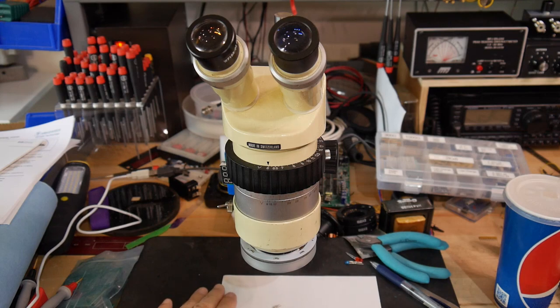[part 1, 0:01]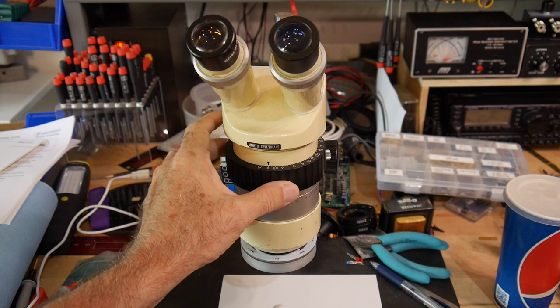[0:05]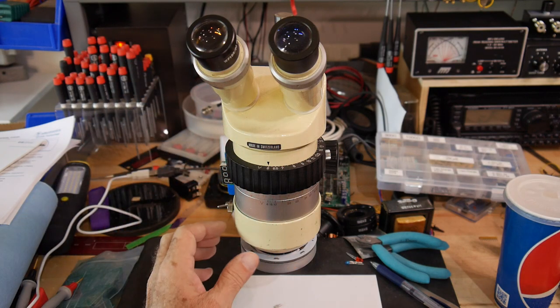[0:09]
All right. I thought I'd show you a hack I did on my microscope. It's a nice microscope. It's a Serio. It didn't have a ring light though. And in the old days, I used to get ring lights that were a little fluorescent tube that wrapped around. But you can get LED ring lights these days. And I'll show you a cheap way to do that.
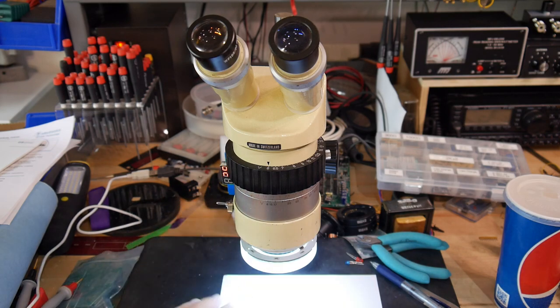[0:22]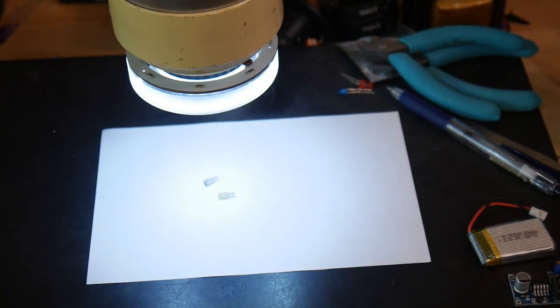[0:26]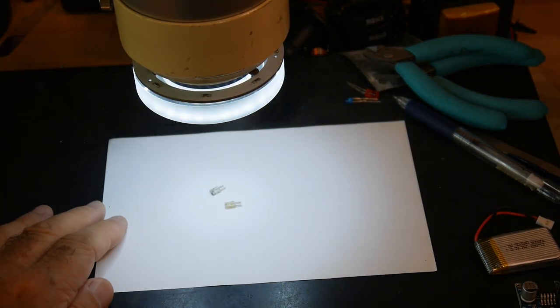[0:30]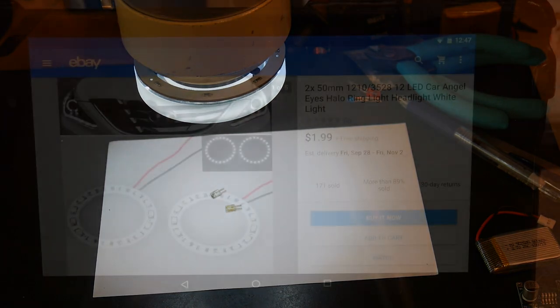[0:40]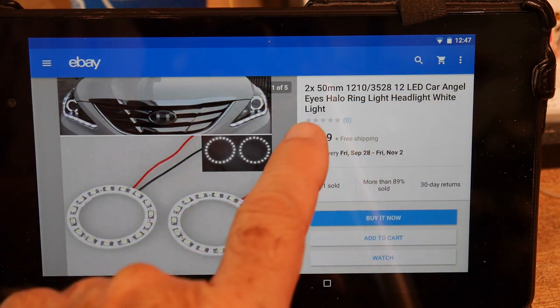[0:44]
You can see the ring light here. Gives nice lighting. And you can get these for just $1 or $2. So let me show you an eBay listing. So the trick is to search on Angel Eyes.
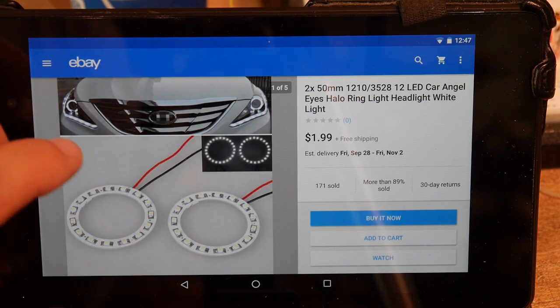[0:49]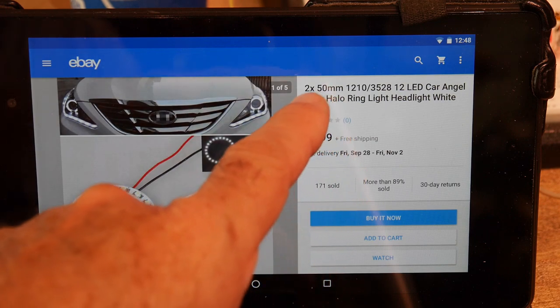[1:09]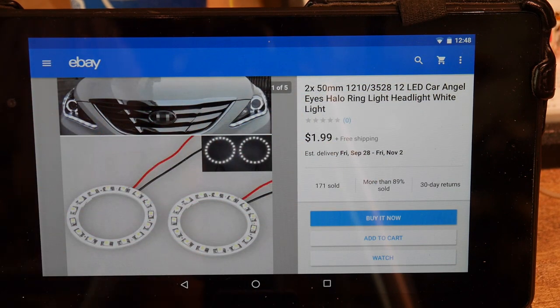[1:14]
So some of the cars, starting with the BMWs, had a ring light in the headlights. And you can get these replacements or upgrades or whatever. They're just a circuit board with a ring of LEDs on them with resistors, so they run off of 12 volts. So here you're getting two of them, 50 millimeter diameter. Again, they run off of 12 volts, and you're getting them for $2. So they're $1 each. So that's a pretty cheap ring light.
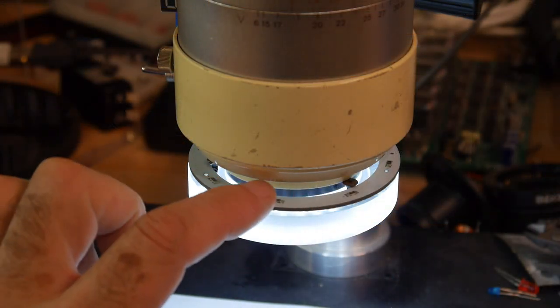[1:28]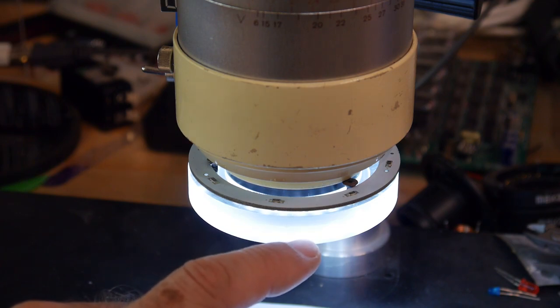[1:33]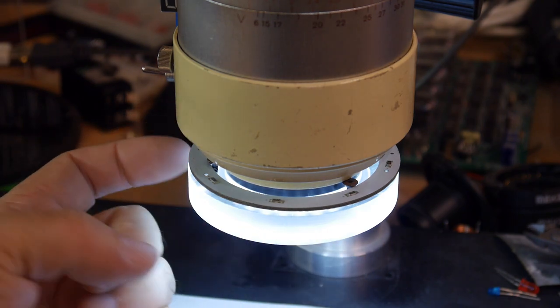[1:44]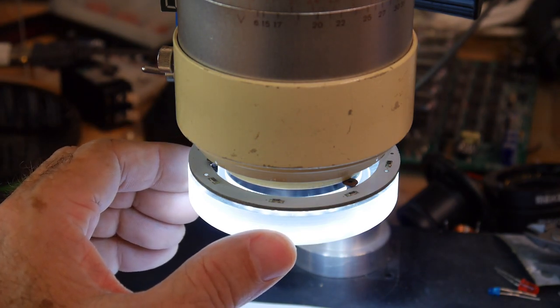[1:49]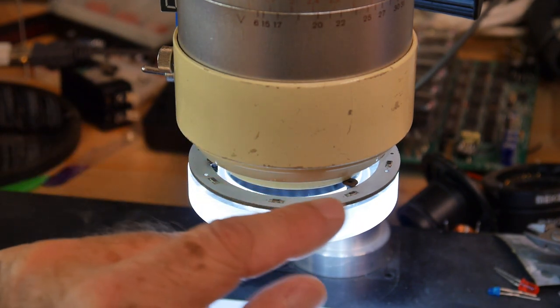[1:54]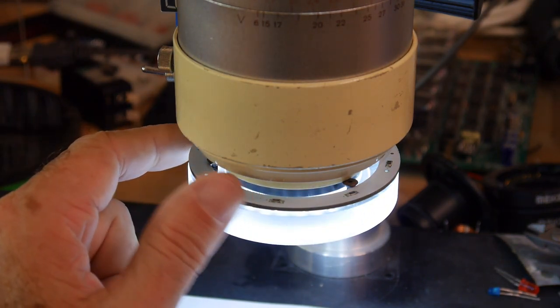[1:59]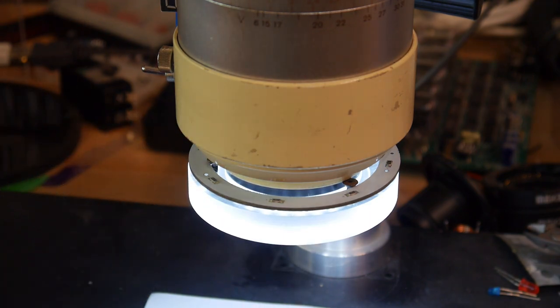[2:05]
So you need some way of mounting the LED. I have a piece of Lexan here that I turned on my lathe, and it's just a ring that fits the lens that's on this microscope. So it's a snug fit on the lens. It's a press fit on the lens, and then the little Angel Eye PC board just sets on top of it. In fact, it's held on by a couple of screws, but you can't really see it here. But anyway, that gives a nice mounting system.
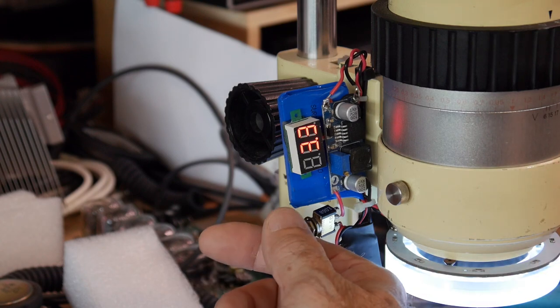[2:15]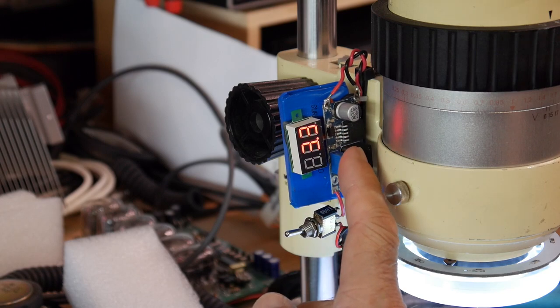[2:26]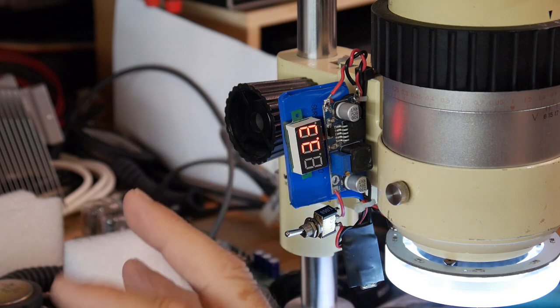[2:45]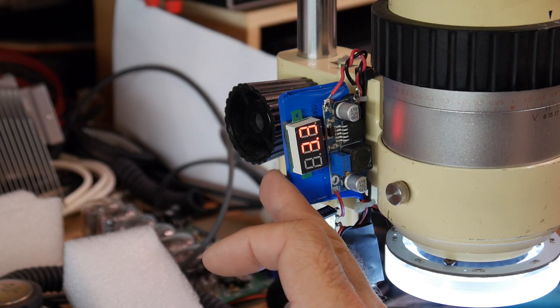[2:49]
So you'll need some way to power the ring light. And for a while, I just would hook up one of my lab power supplies. Then I decided to go ahead and make it battery powered. So there's a lithium battery here. There's a DC to DC converter to 12 volts. There's an LED monitor for the battery voltage, and then the battery charge circuits down here. So I'll show you the components I used to build this. I stole this battery out of something I bought at some electronic thing that I had. It's like a 600 milliamp hour battery, 3.7 volt lithium.
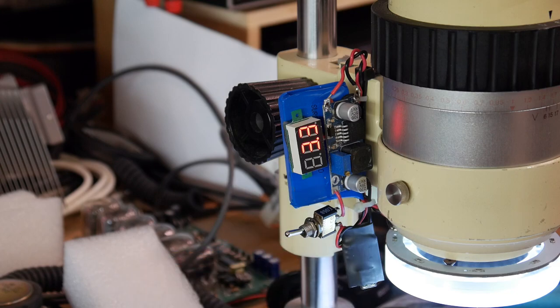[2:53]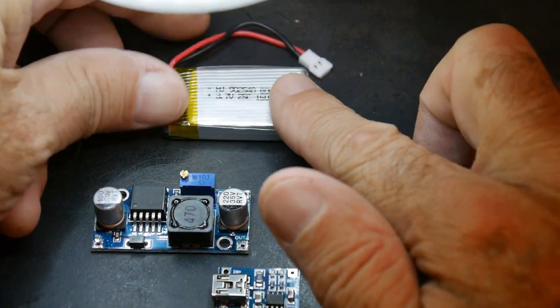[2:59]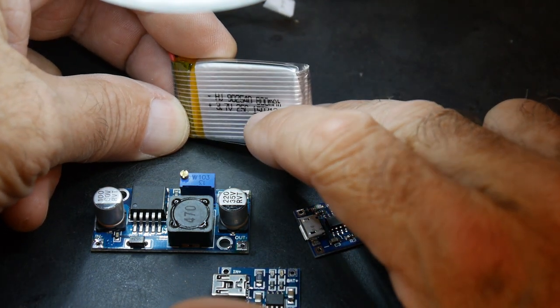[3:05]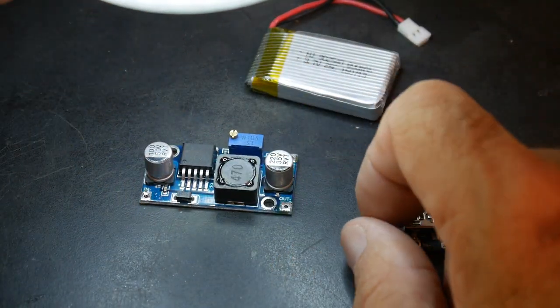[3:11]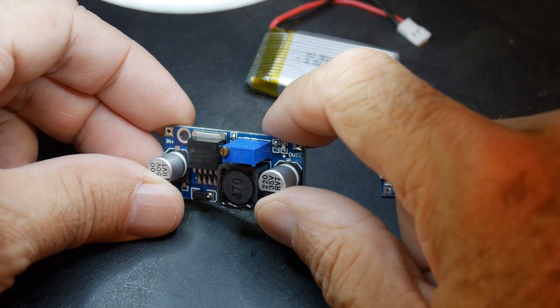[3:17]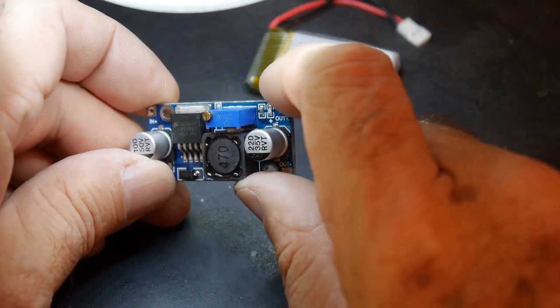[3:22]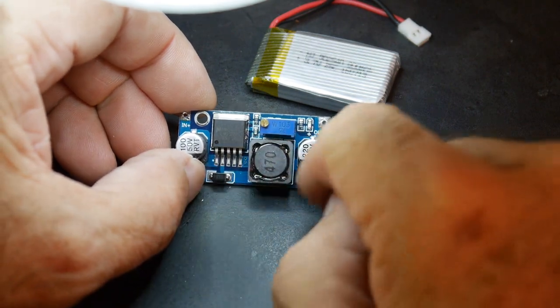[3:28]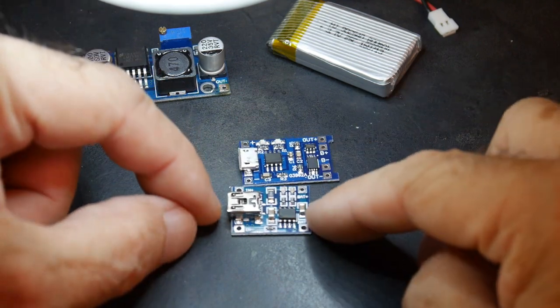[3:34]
I'll show you the parts. All right, so here are the parts. This is just some kind of random battery. This one's a 3.7 volt battery also. This one is 800 milliamp hours. And then you'll need a DC to DC converter. This is one made out of a LM2596, is that right? I don't have a magnifying glass. That's right. And so it does a good job. And then you'll need a charging circuit, and there's a couple available.
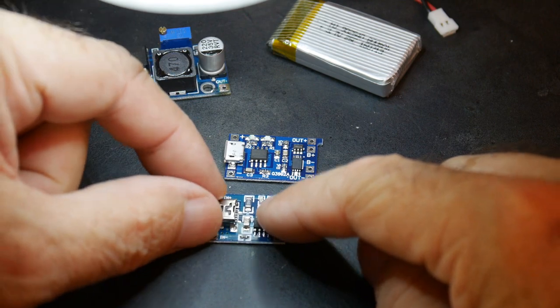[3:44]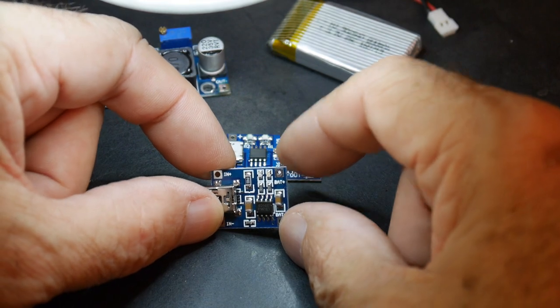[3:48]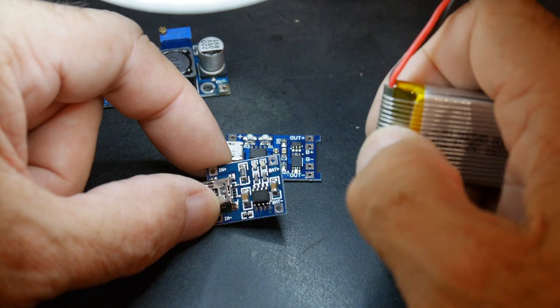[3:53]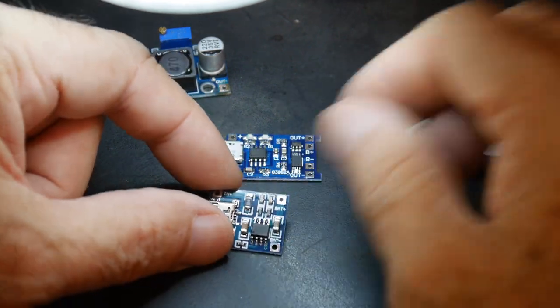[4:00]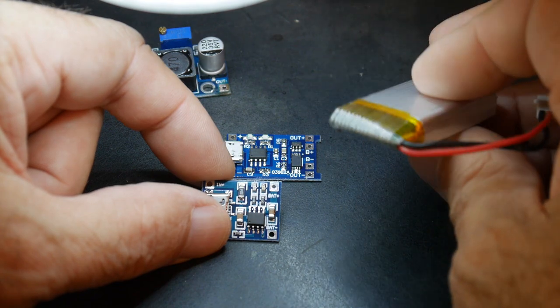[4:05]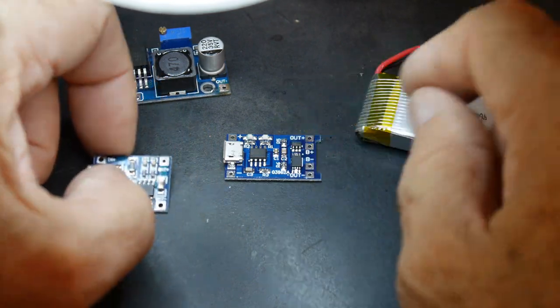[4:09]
This is the one I think I'm using here, and it's a charging circuit, 5 volts in, and you put your battery across here, and it handles all the charging. Sometimes your battery has a protection circuit in it, and sometimes your battery doesn't have a protection circuit in it. So if you have a protection circuit, then you don't need this. Protection circuits make sure that the battery doesn't go below, say, 2 volts. Make sure it stops.
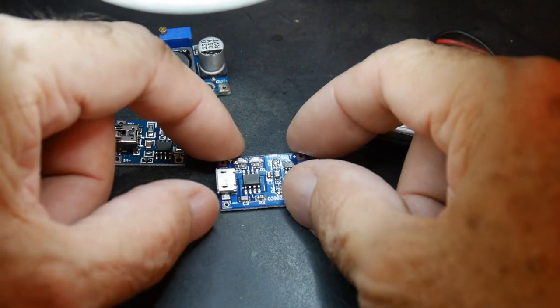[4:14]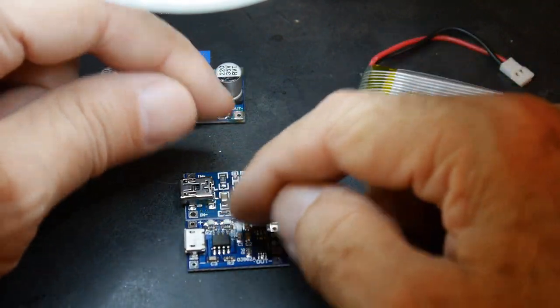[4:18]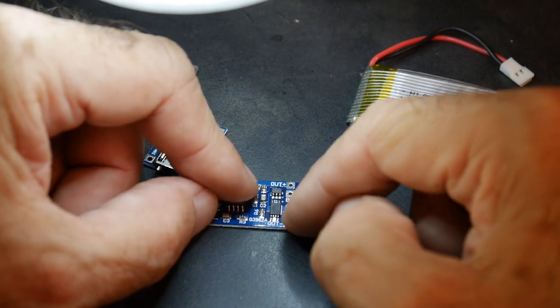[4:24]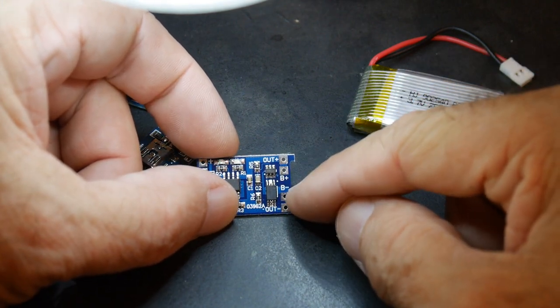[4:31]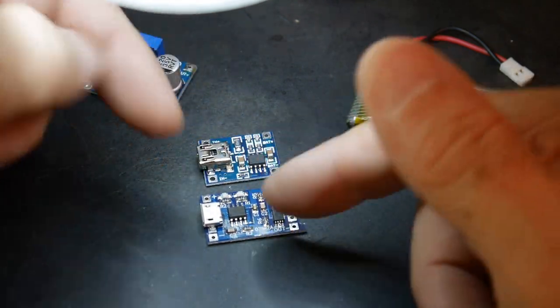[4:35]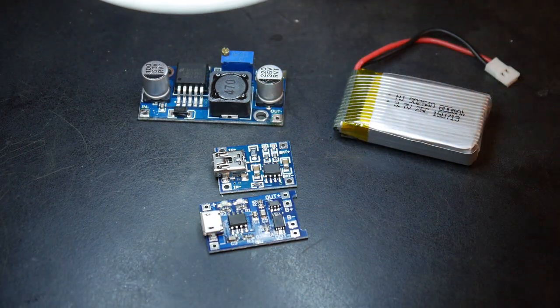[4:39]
If you don't have a battery with a protection circuit in it, then you can get this kind of board, which is the exact same circuitry as this one, but it has extra circuitry on the back. And this extra circuitry on the back is the protection circuitry for the battery. So the battery goes across the B terminals, and then the output is the voltage terminal. So, I mean, these things are dirt cheap too. They're like 50 cents each or something. So put together a real nice little system.
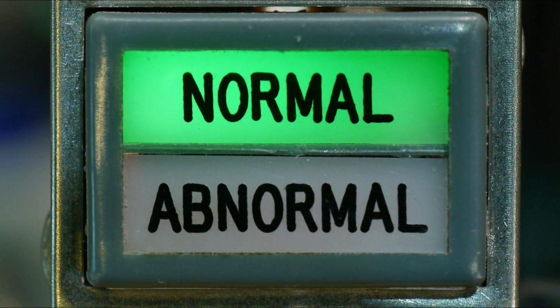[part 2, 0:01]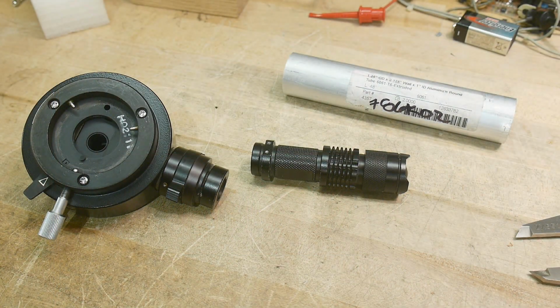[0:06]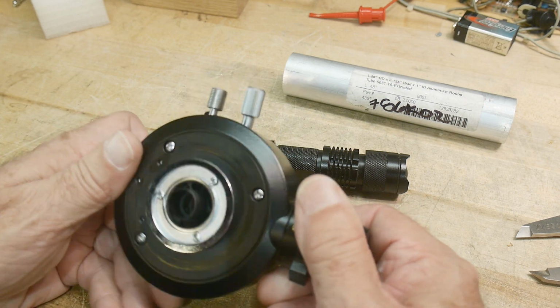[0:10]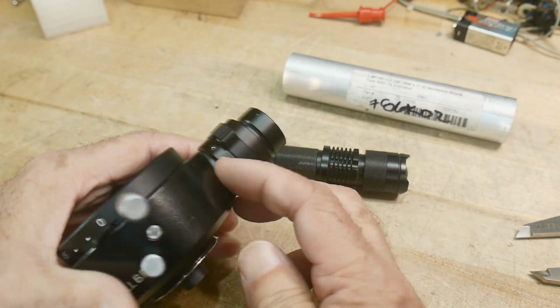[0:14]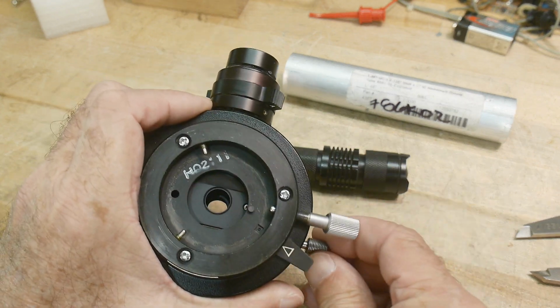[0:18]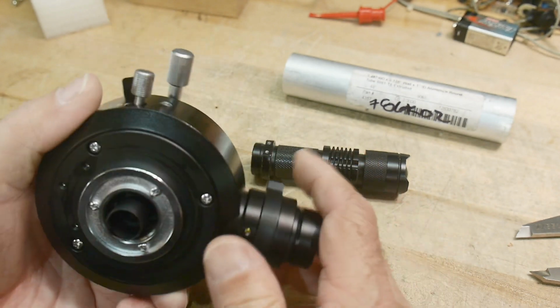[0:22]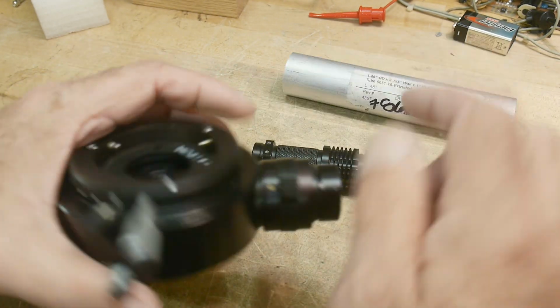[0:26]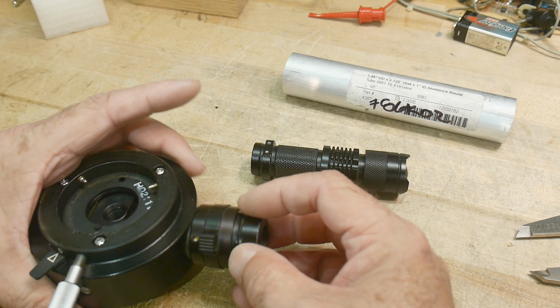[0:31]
All right, I get to do some machine shop stuff today. I have this out of my new microscope. This is the illuminator section that has the prisms in it. You can see here, it moves the prisms in and out for bright field, dark field. And the light comes in here and then you look through it that way. And so it needs to have an illuminator on this side of it.
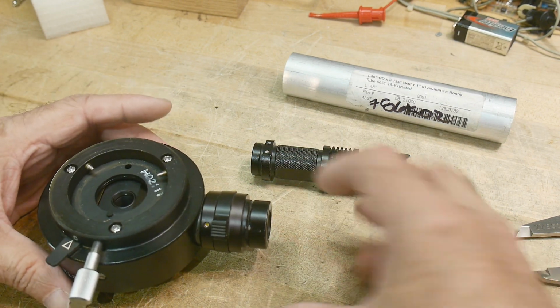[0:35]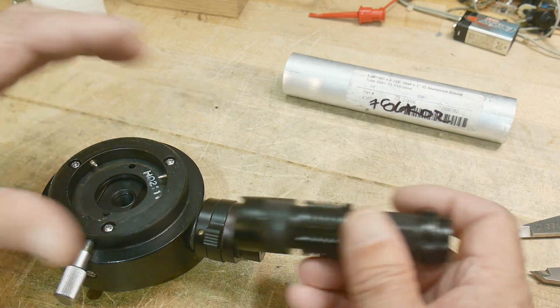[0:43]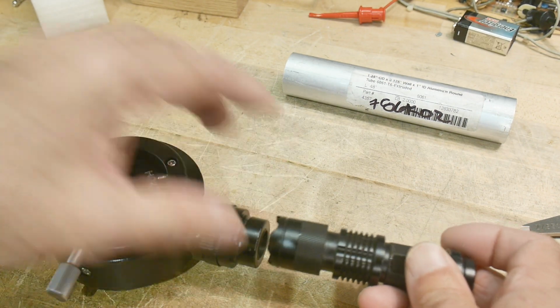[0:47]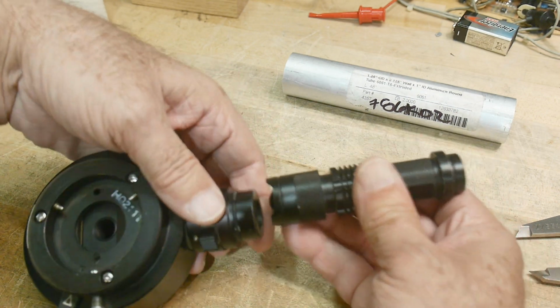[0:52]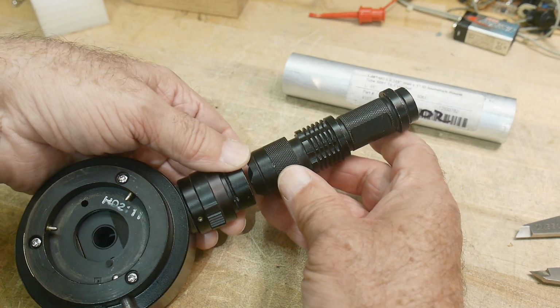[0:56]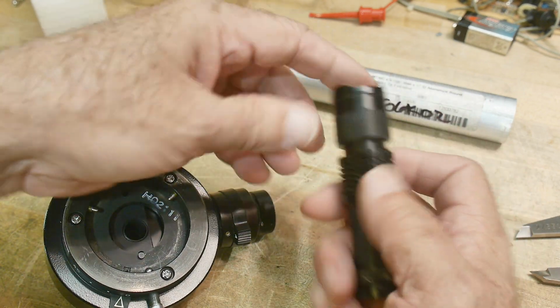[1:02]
Now, from Olympus, it had a big light bulb and heat sinks and everything and came in here and attached. I found that this flashlight works pretty good for this thing. And it is almost the same diameter as this here. These are both about 1 inch. And so what I need to do is make something to hold these together permanently.
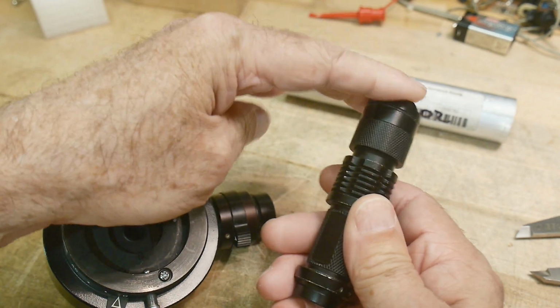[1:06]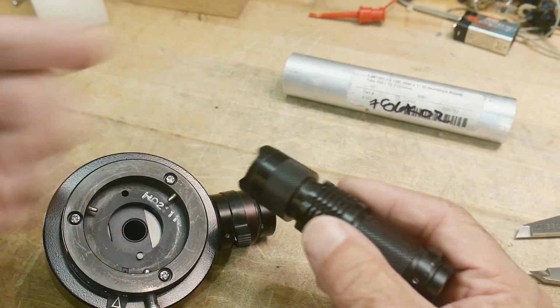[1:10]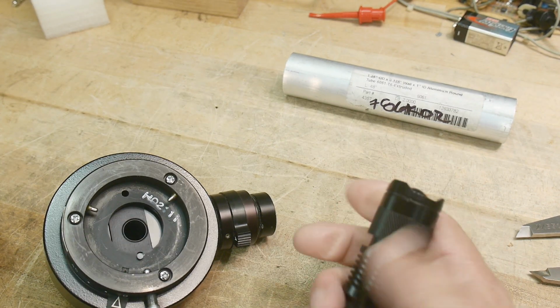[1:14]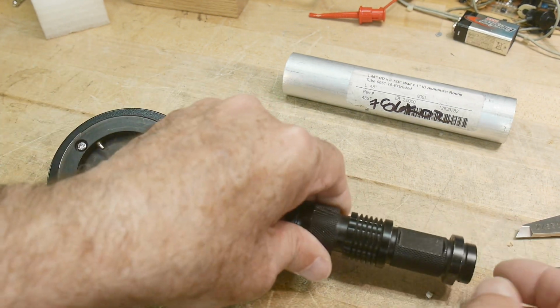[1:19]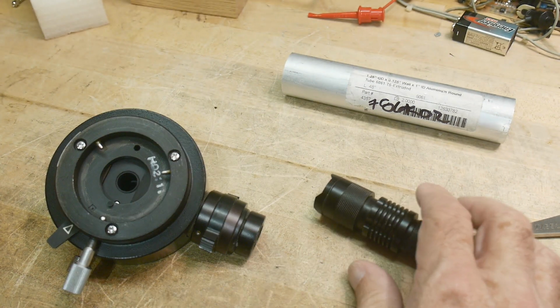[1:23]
And it's really nice. Now the flashlight also has focusing. It has a barrel that can go in and out. You can get a wide beam this way or a narrow beam this way. And that's also nice for the illumination. Sometimes it likes a wide beam. Sometimes it likes a narrow beam. So I think what I'll do is I'll make it so this is sticking out and I can push it in and out. So that'll be nice.
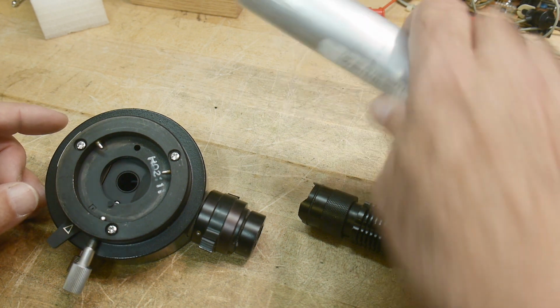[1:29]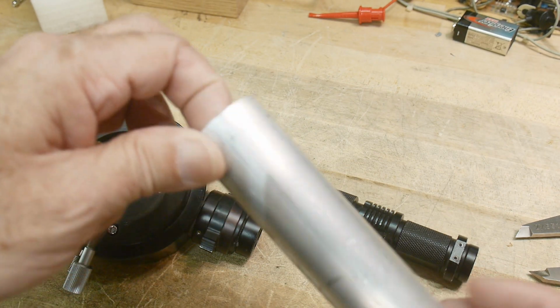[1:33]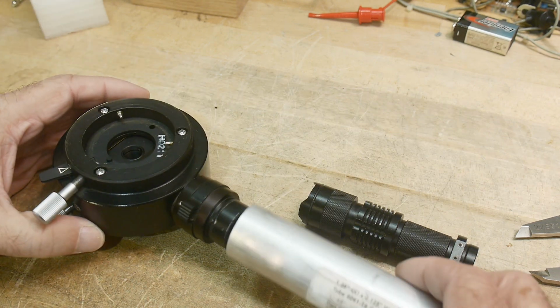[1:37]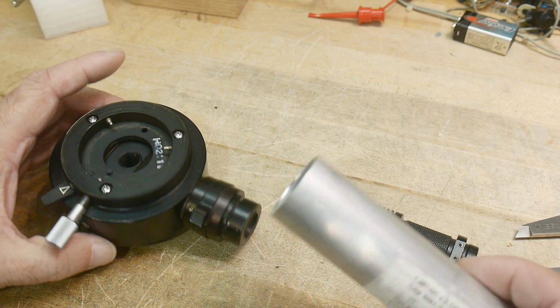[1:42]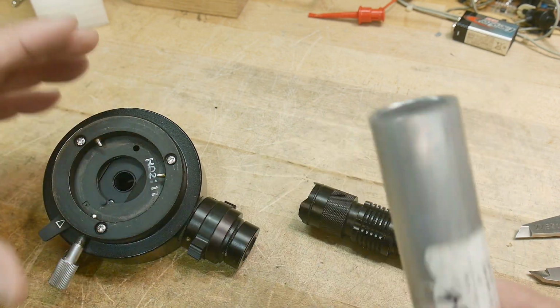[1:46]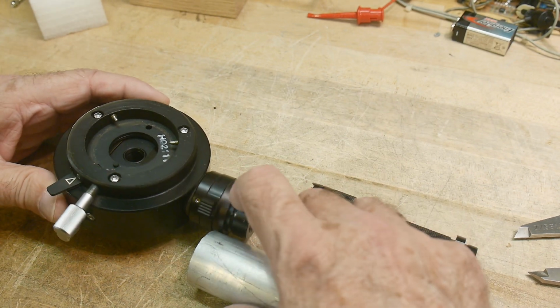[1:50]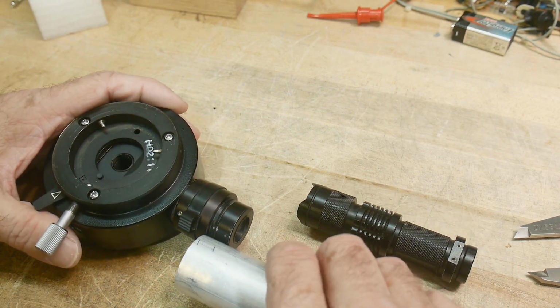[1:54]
I needed some stock material to hold this all together. And so I got some thick wall tubing, 1 inch ID and eighth inch wall. So that will be perfect. It just barely won't fit, so I can bore this out. And so I think my first operation will be to bore this out and then put some set screws in it. There's a groove here for the set screws to bite into.
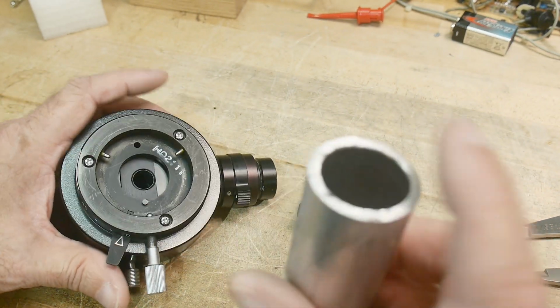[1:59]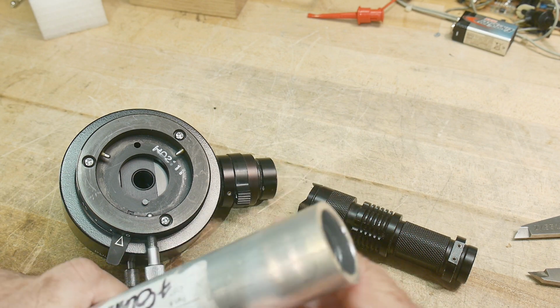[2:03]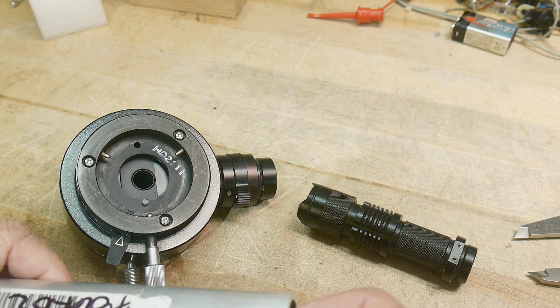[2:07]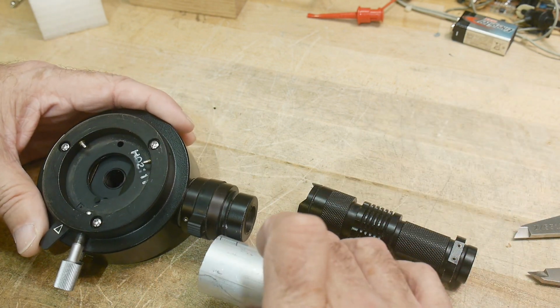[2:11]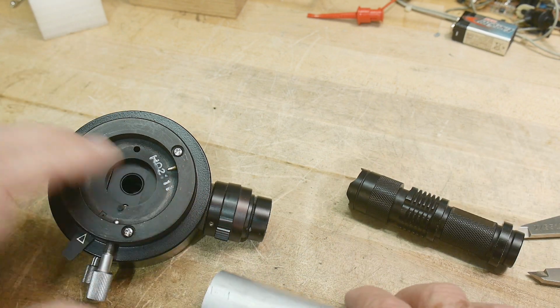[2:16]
So I think what I'll do is I'll put it in the lathe, I'll dress the end, I'll bore out the middle, and at least get this part working, and then figure out how long I want to make it, and attach the other end. So yeah, let's go do that.
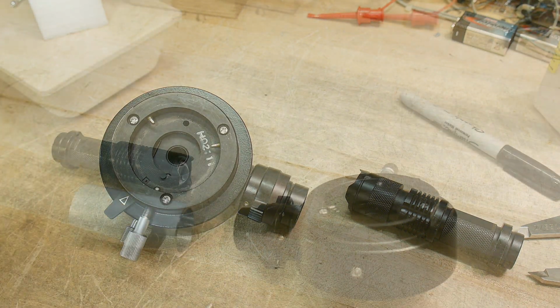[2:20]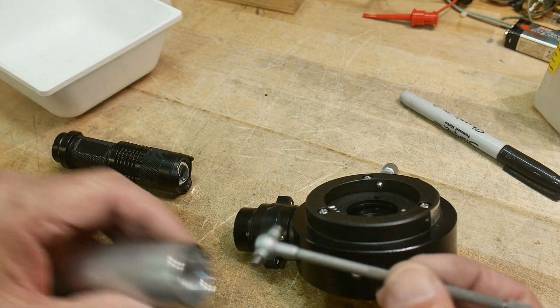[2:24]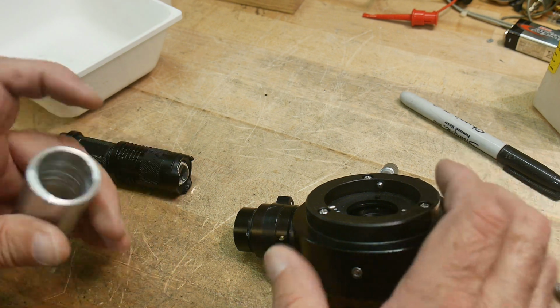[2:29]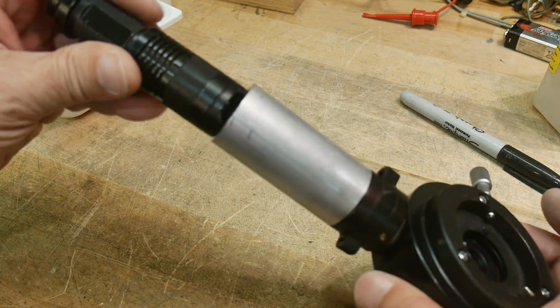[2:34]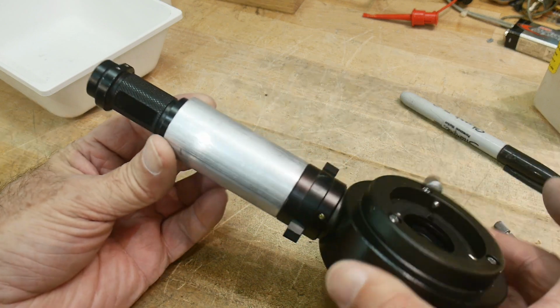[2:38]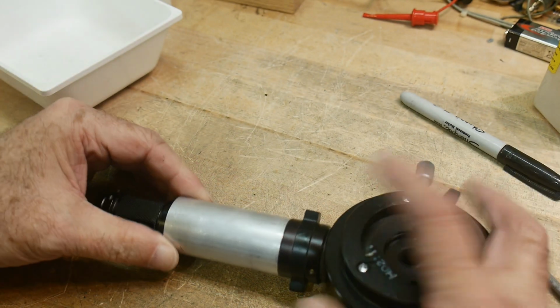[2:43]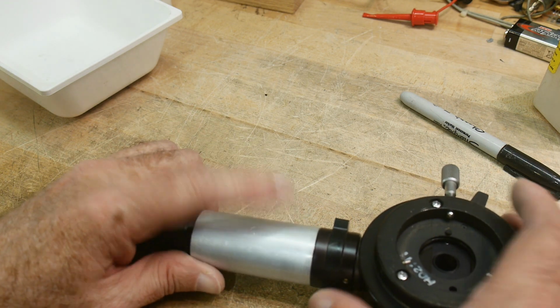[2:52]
All right, I have my tube made. Got to use my inside measurement tool, which is fun. So this goes in here like that, and then the flashlight goes on the other side. Looks good. I need to put some holes in here now and figure out what I want to do. I think these holes are okay.
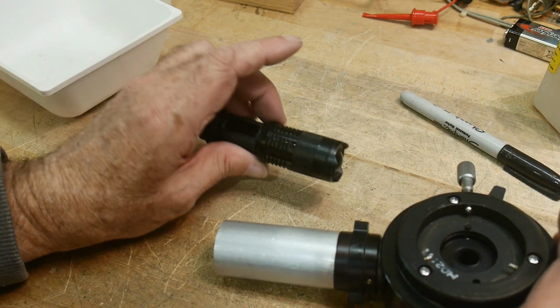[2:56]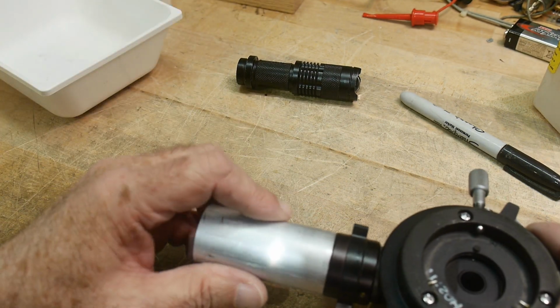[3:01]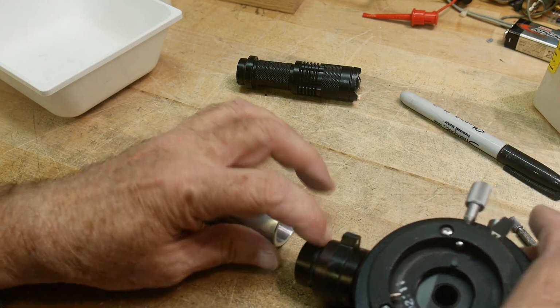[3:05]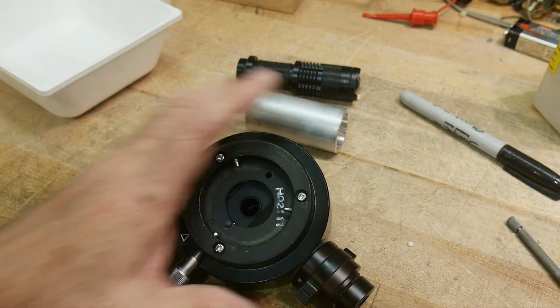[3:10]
I'm not quite sure if I want to crank down on the flashlight quite yet. Not sure where I want to put the screw, so I'm going to leave it an open tube, see how it works in the microscope. But we can at least put this groove in here. Let's go measure that.
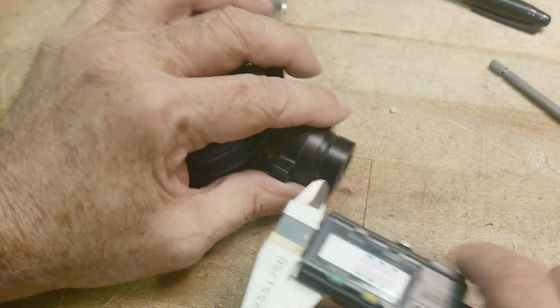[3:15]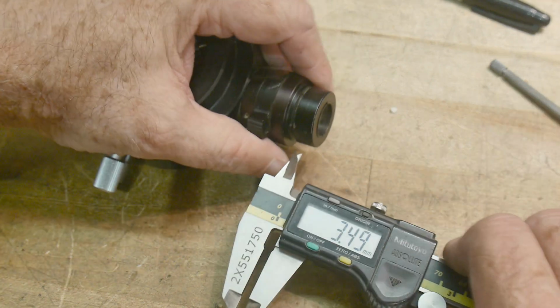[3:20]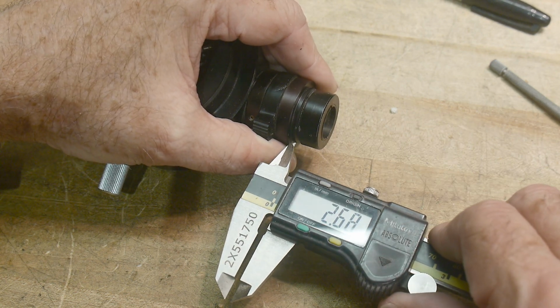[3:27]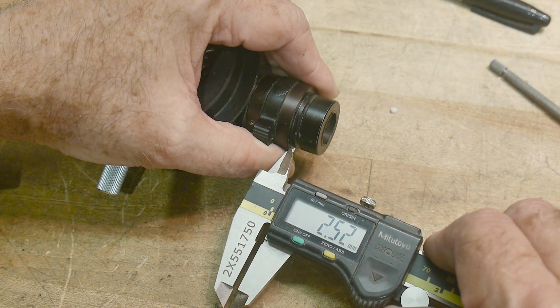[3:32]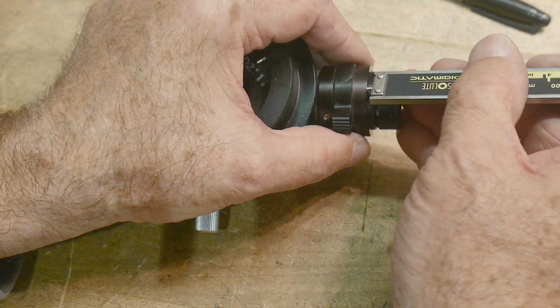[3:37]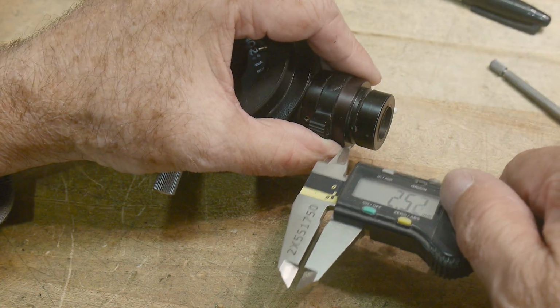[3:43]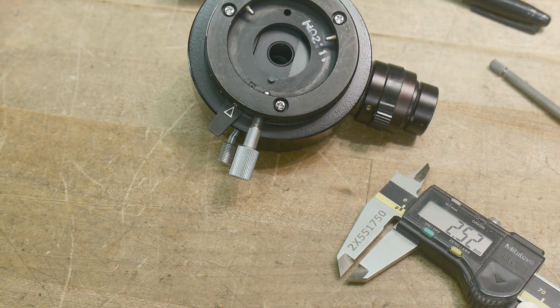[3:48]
Let's see if I can kind of estimate where the center of the groove is here. Lighting's not great here. The center's right about there. 2.6? What is 2.5? Figure they'll put it on an even mark, right? They're Japanese, probably gonna put it on an even mark. I think 2.5 is probably pretty good. Yeah, 2.5 I think is fine.
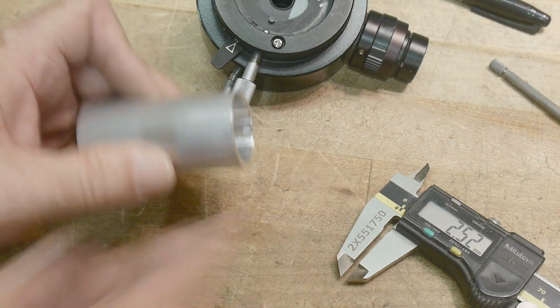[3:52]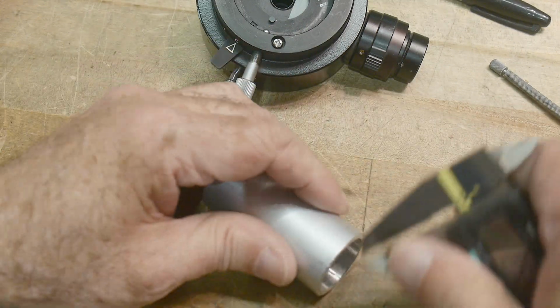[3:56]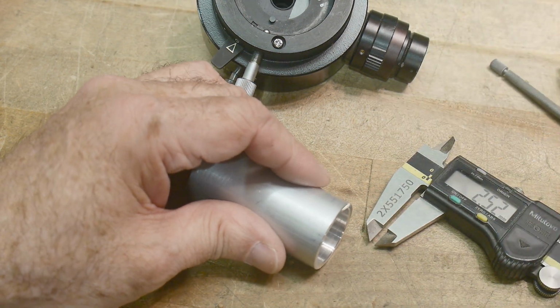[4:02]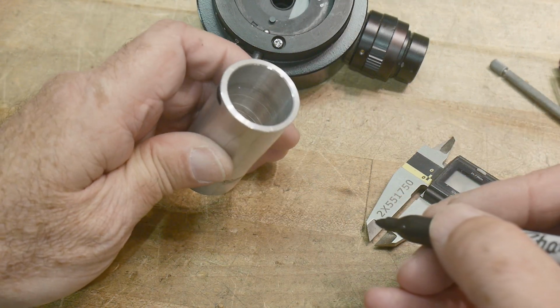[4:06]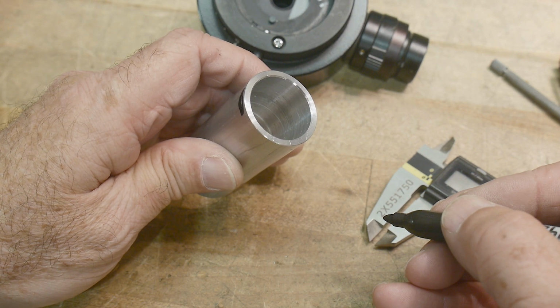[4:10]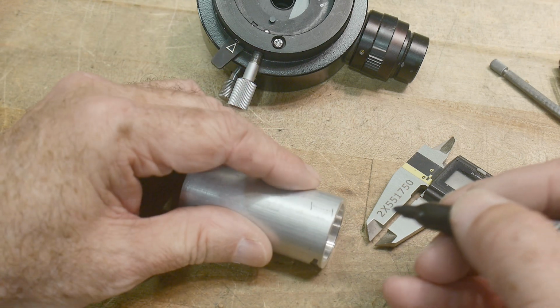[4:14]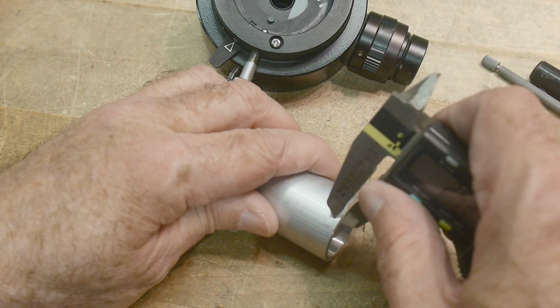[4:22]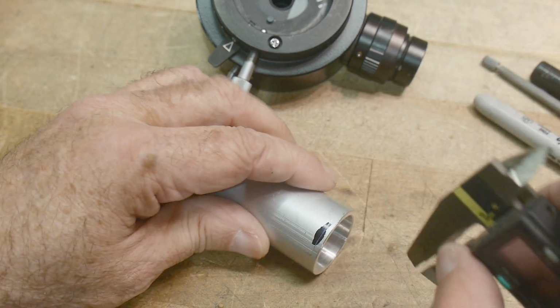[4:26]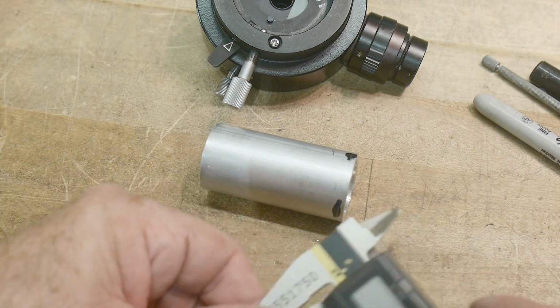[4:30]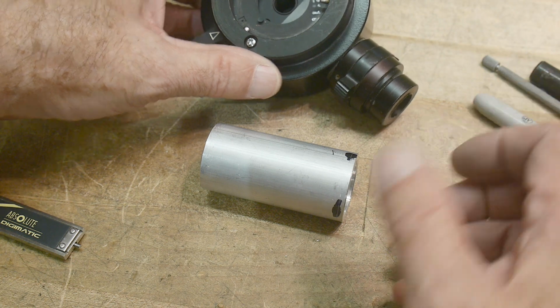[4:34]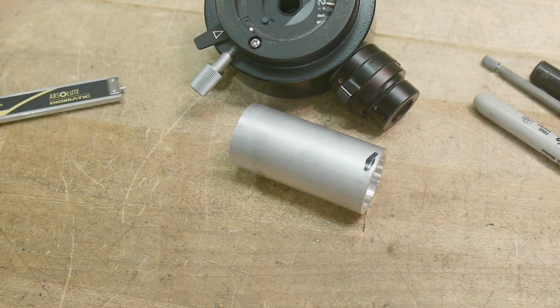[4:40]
So I will go ahead and transfer that onto here. I'll also put some black on it here. Do I need two for now or just one? I think it's better probably to have two, maybe 90 degrees apart. All right, so let's mark this. All right, that looks pretty good. So I'll probably use a 4-40 set screw. So let me put some holes in here and put some set screws on.
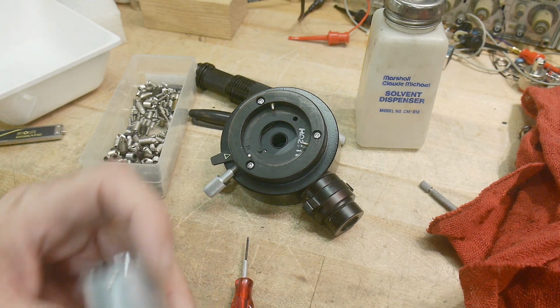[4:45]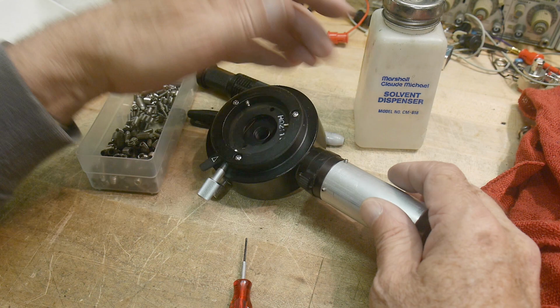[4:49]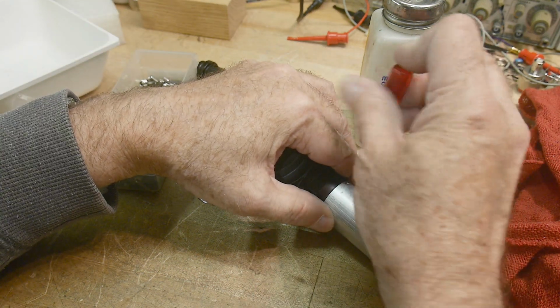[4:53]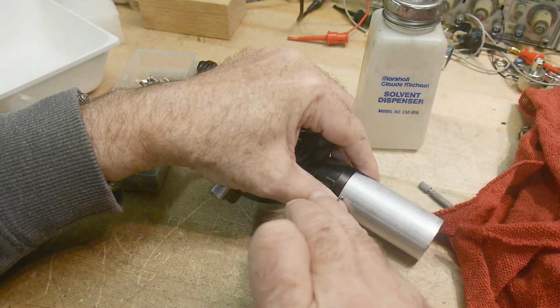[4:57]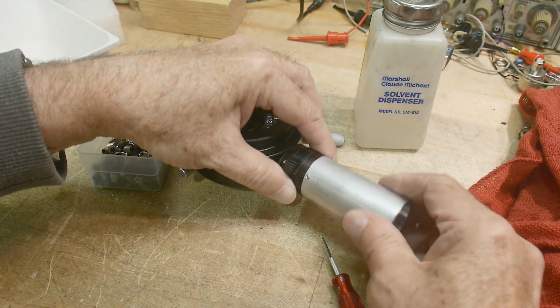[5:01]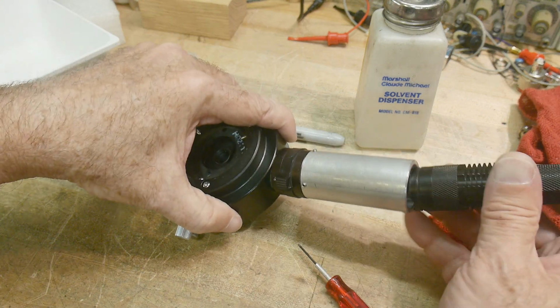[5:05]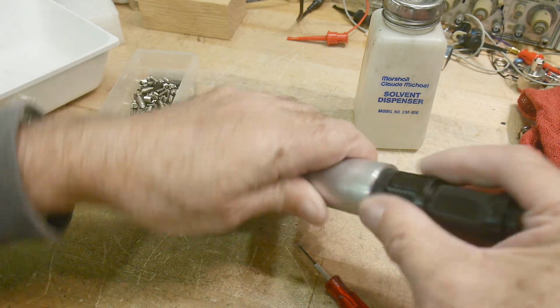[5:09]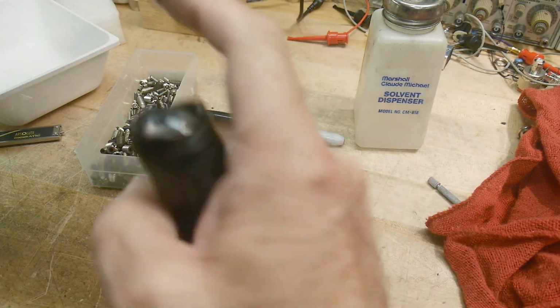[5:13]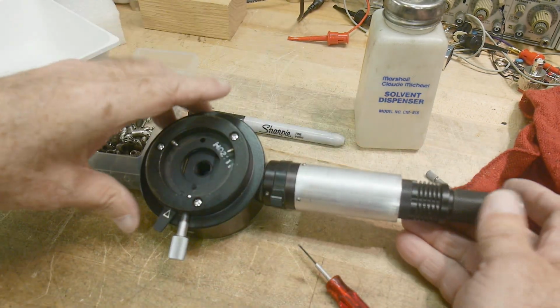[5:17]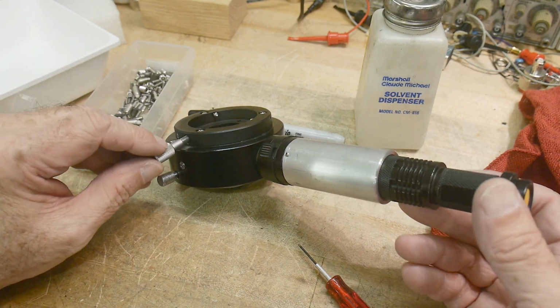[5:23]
All right, got my set screws in. See if this is gonna work. Oh, very rigid, very nice. Then my flashlight will slide in here. A nice tight fit. What happened? I just got something in there. All right, that's gonna work out great. All right, put it on the microscope and try it out.
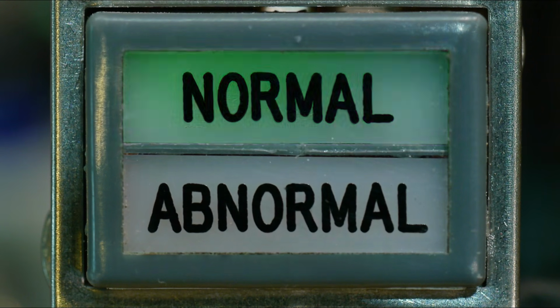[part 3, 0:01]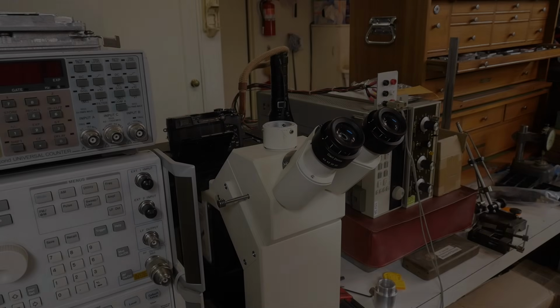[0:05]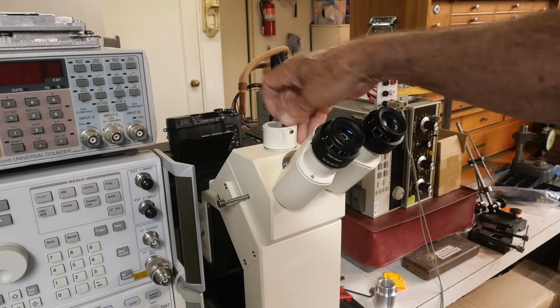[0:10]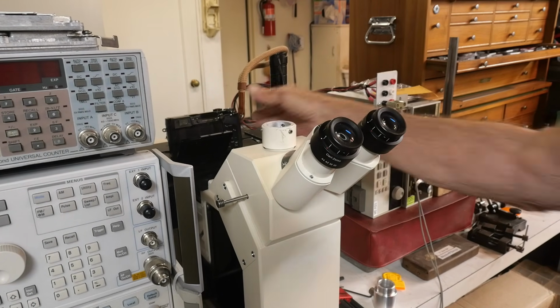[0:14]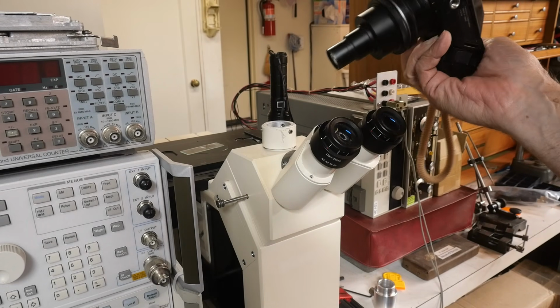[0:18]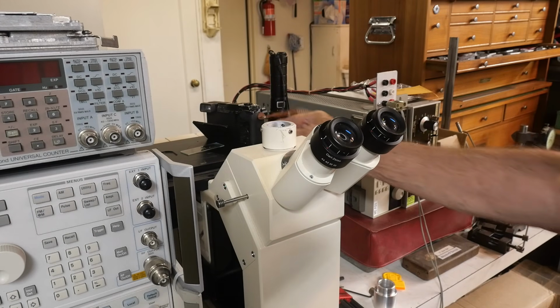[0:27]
All right, this microscope has a trinocular head, so you're supposed to mount a camera here, and I need some type of adapter. I do have a camera that I use on my Olympus microscope. It has a projection eyepiece in it, so it's ready to go, but it doesn't mount. So I took some measurements and I designed a little adapter here.
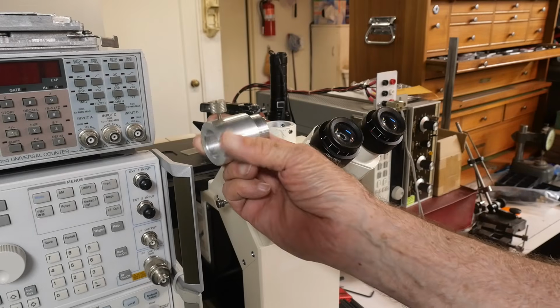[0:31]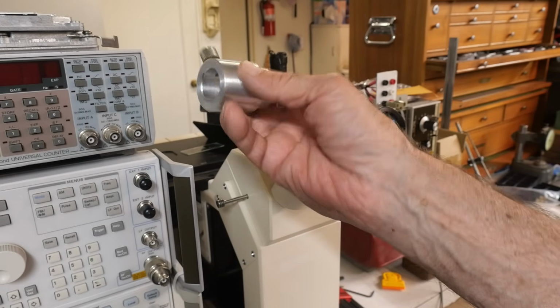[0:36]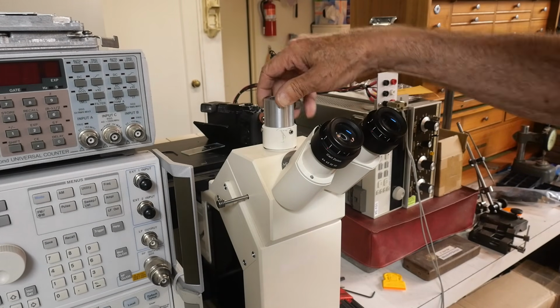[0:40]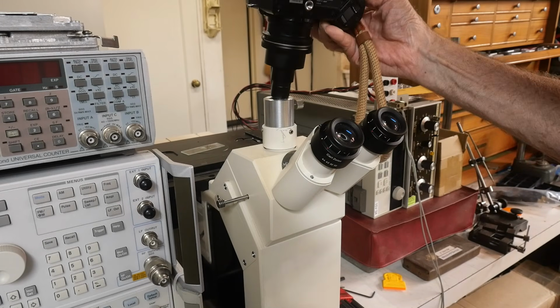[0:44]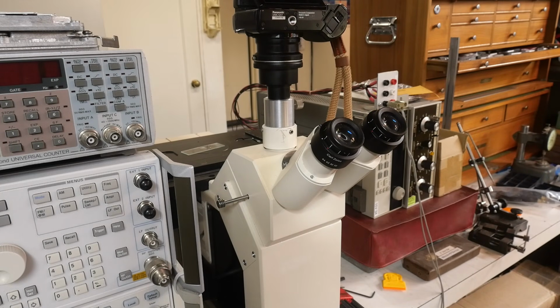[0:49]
Okay, I got to use my lathe. Got to use my new DRO. It worked really good. So I got to measure diameters and stuff with my DRO. And so this is going to pop in here, like so. And then the camera will go in up here. And I put a thumbnail on it here. So yeah, that's going to work out great and be able to take some pictures.
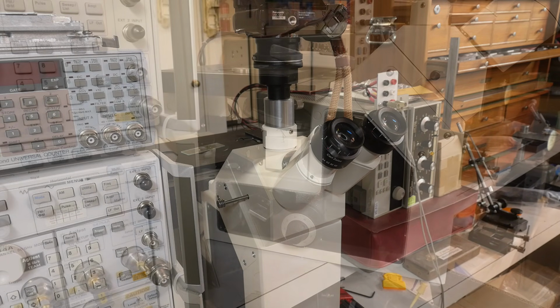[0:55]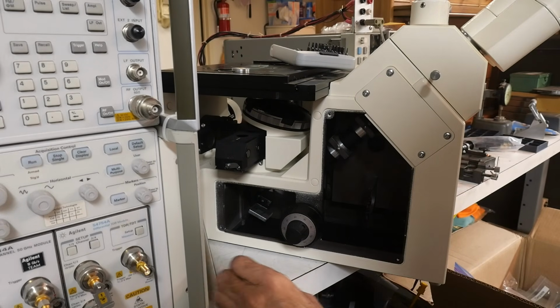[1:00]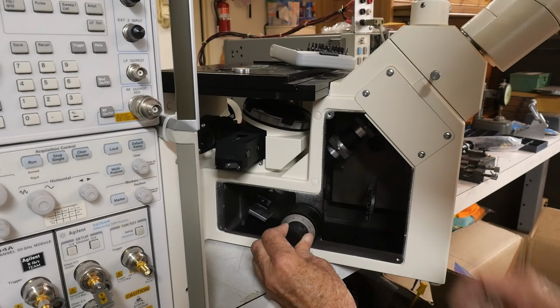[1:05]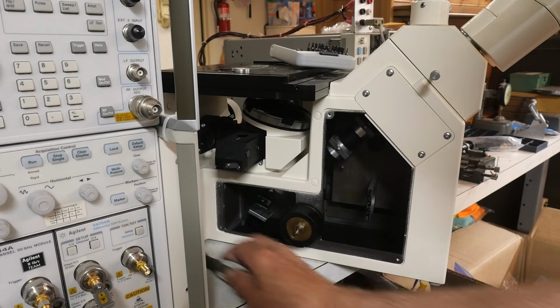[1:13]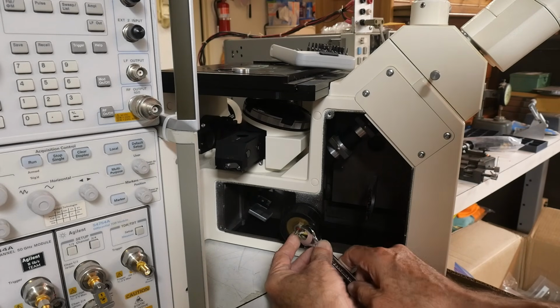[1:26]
All right, I want to put the cover back on. So I need to do two things. One is I need to take this knob off, and that will expose the wheel. I guess I need a wrench. Not the right size. Still not the right size. Bad guess. All right, there we go.
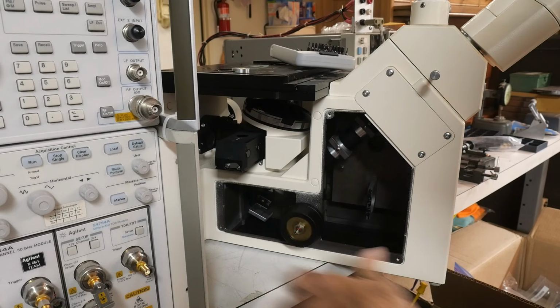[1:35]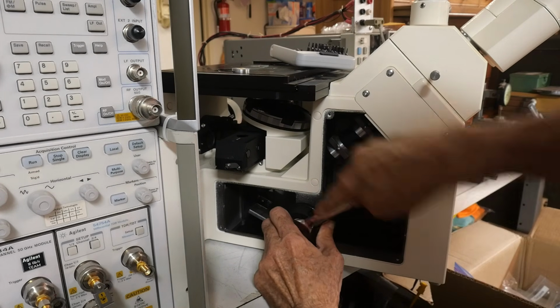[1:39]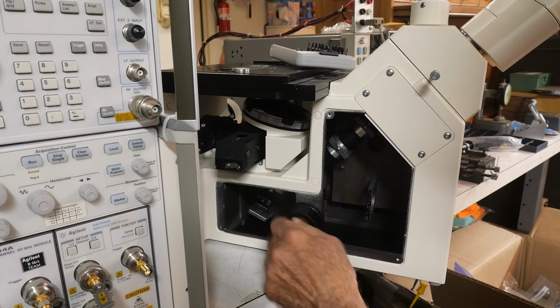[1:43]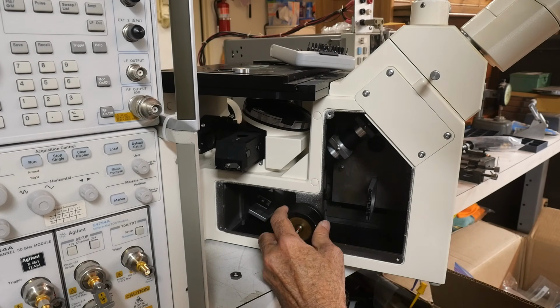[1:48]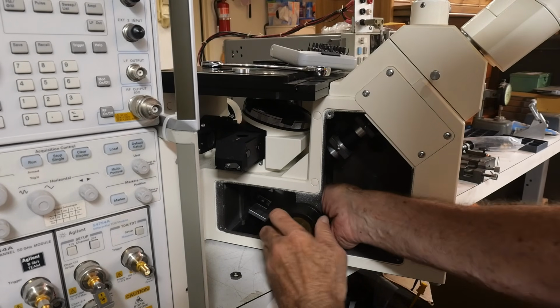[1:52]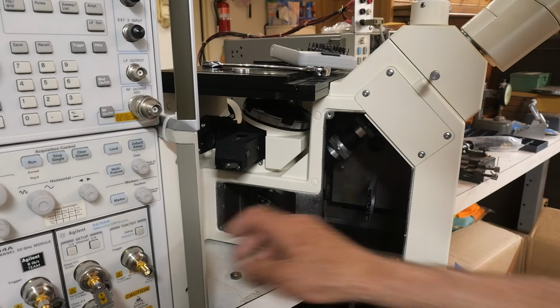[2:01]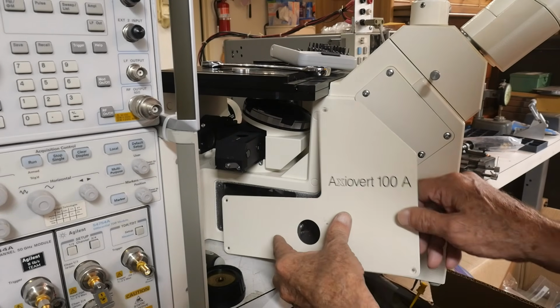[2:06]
All right. Does that come off or does it thread off? Let's see. That threads off, okay. Shaft on the inside. There we go. Now I can put the side cover back on. Oh, that's much nicer. I gotta find some screws.
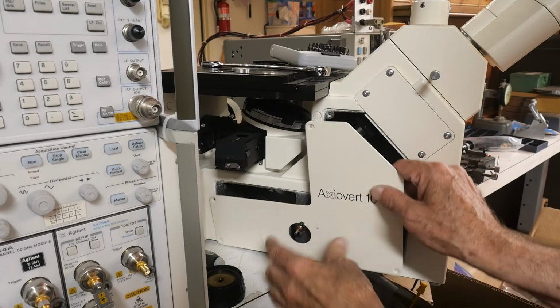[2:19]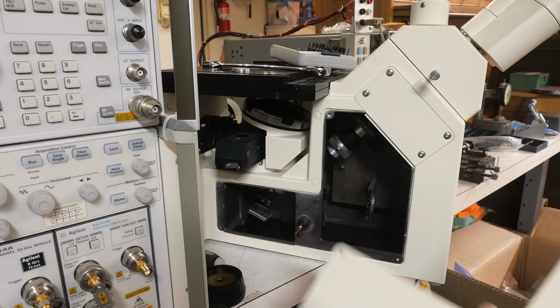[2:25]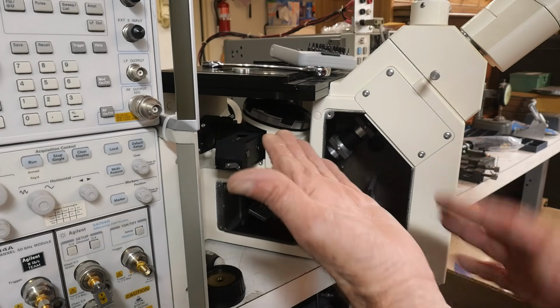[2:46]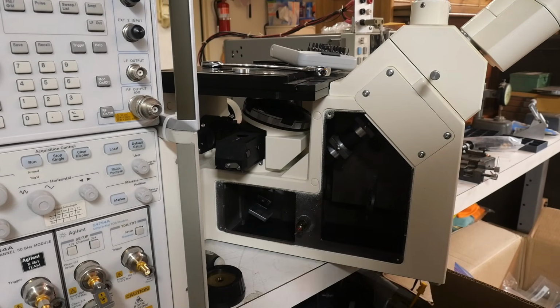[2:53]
But before I put the cover back on, I'm going to clean that mirror. It's quite dusty. And so I need to go find some optics cleaner, which I have. You can use alcohol, but it does leave a slight residue. There's some good optics cleaner. What you don't want to do is scrub it. One of the techniques you can do is just to use some lens paper and drag it across. That does a good job. So yeah, let me go find some stuff and I'll clean that and put it back together.
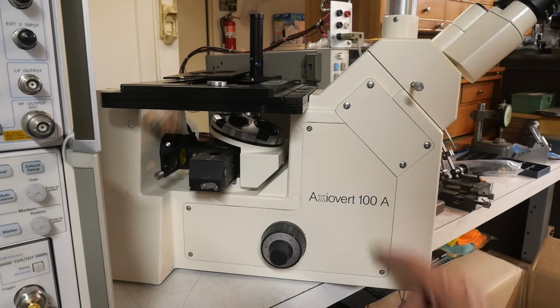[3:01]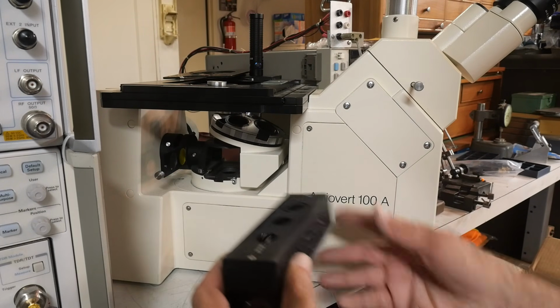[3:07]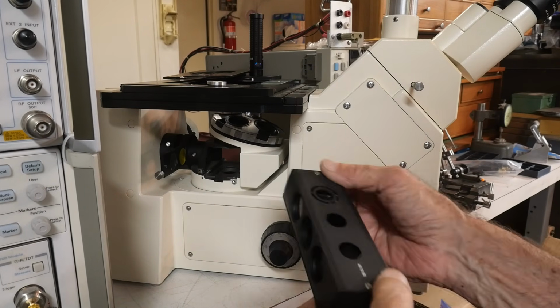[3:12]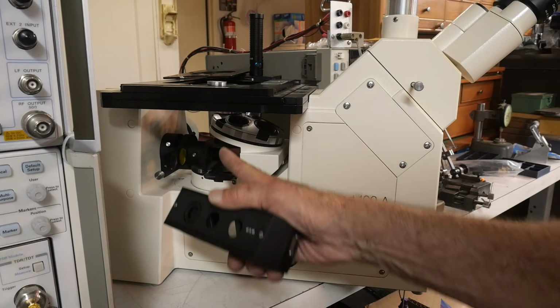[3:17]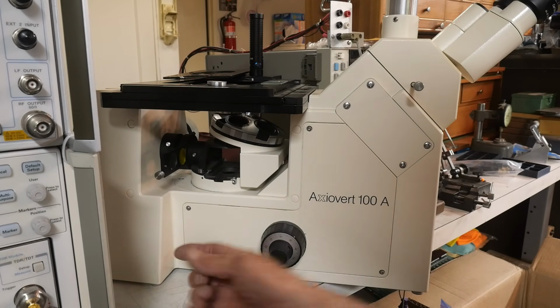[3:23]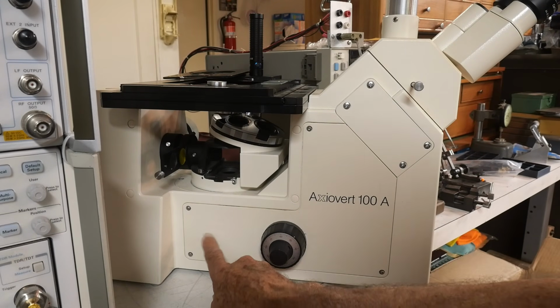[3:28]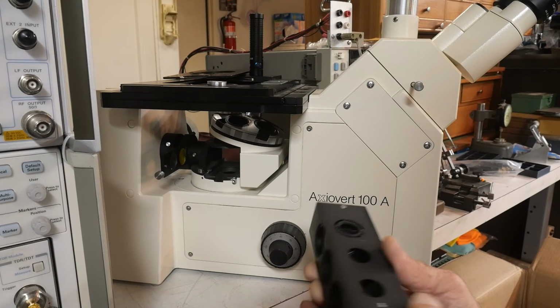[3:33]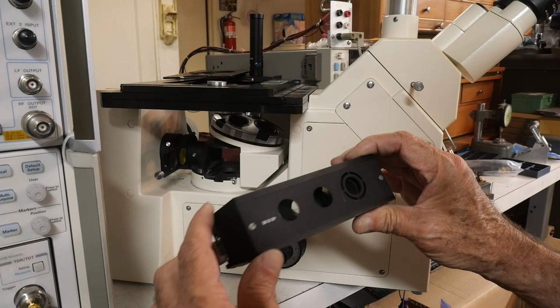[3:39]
Now, doesn't that look nicer? Yes, indeed. While we're here, I can show you, it's a strange device. It acts as a prism, so light comes in the back and then goes up. You're also looking from the bottom, right? So you look down this way, and there's a mirror we saw, and I cleaned the mirror, and then it comes up this way, and then this is a two-way splitter. So part of the light just goes straight through. In its middle position, it's just straight through.
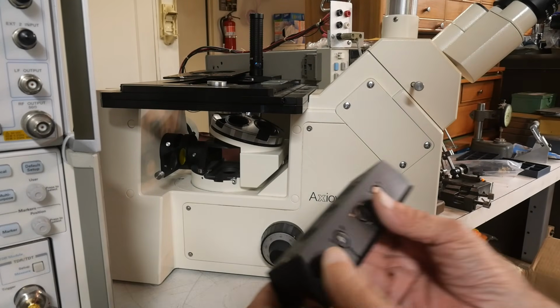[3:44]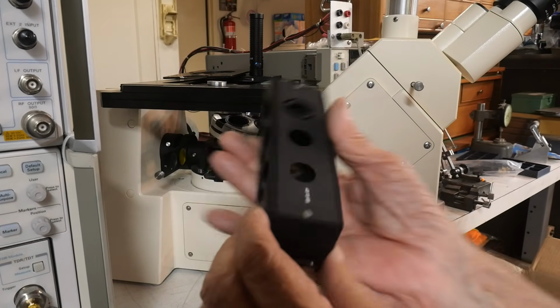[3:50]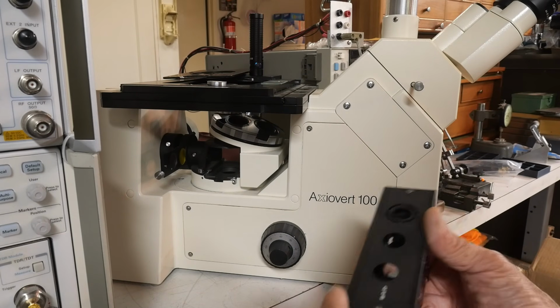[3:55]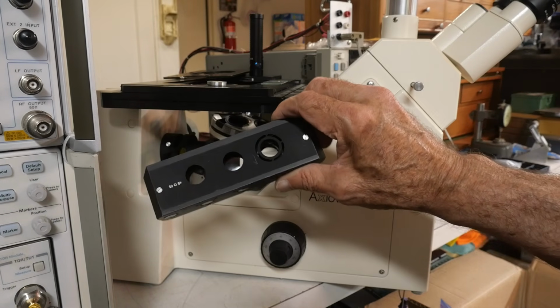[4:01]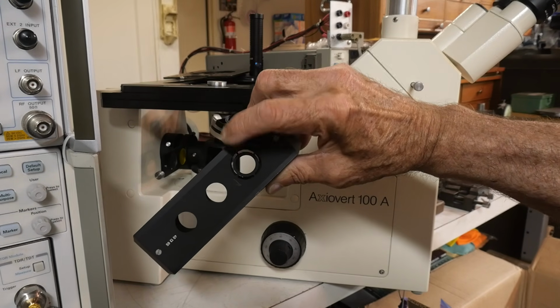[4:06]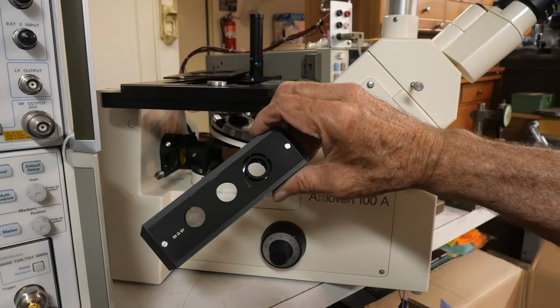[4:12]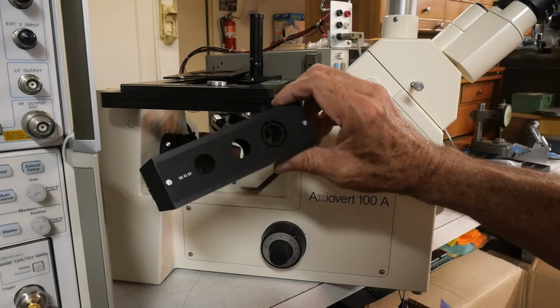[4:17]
And on the left position, it says D, it has a neutral density filter on this side that limits the amount of light, so it darkens the light. And then on this side is the dark field illumination. That's something I talked about in a different video. I don't know if I remembered to put it down below, but can you see that there's kind of a ring? This one here. If I get it just right, there's a ring around it. So you look through the hole, and then that outer annular ring is where the illumination goes.
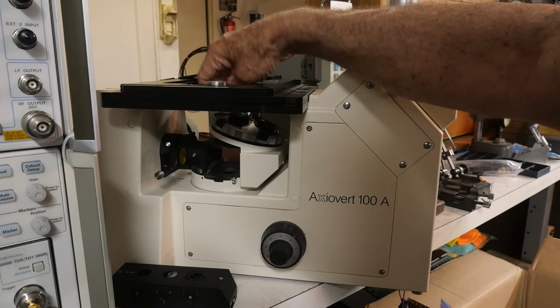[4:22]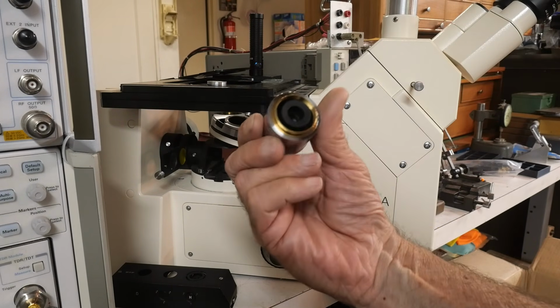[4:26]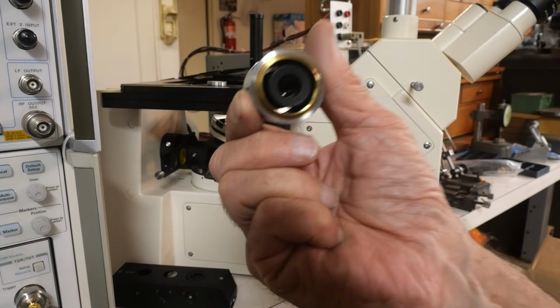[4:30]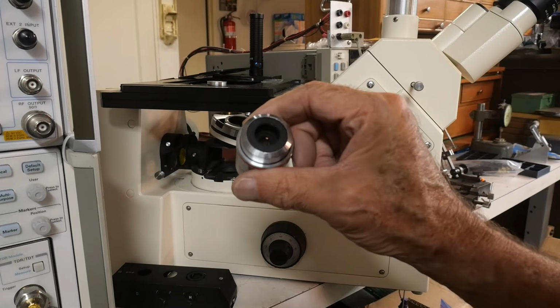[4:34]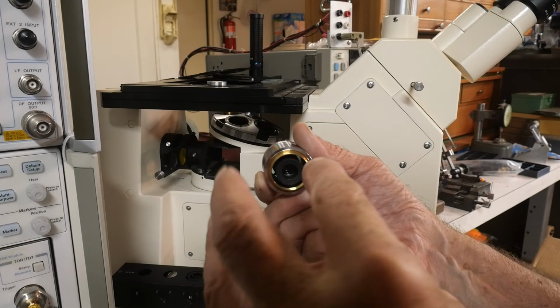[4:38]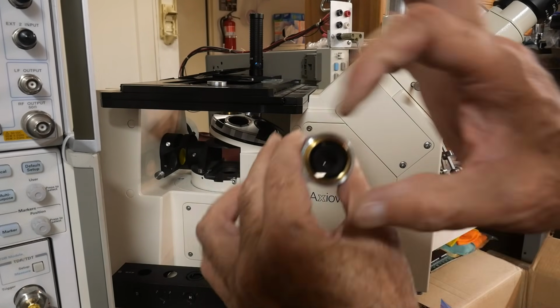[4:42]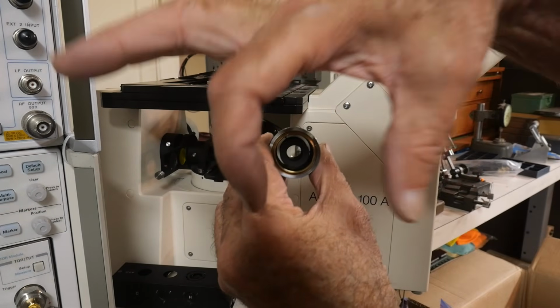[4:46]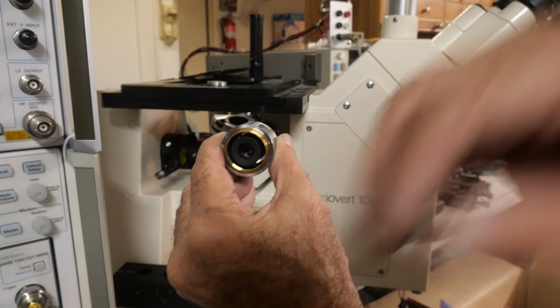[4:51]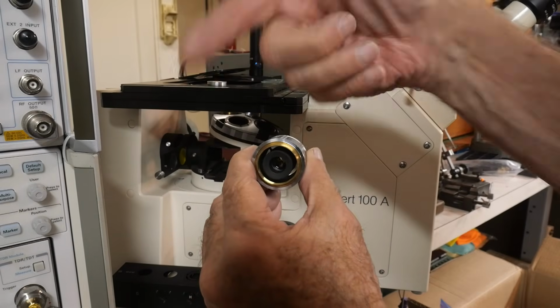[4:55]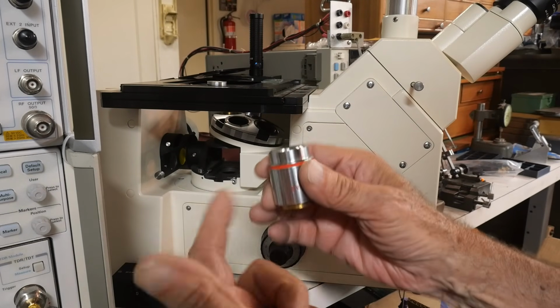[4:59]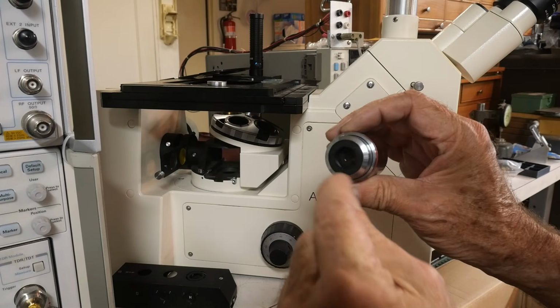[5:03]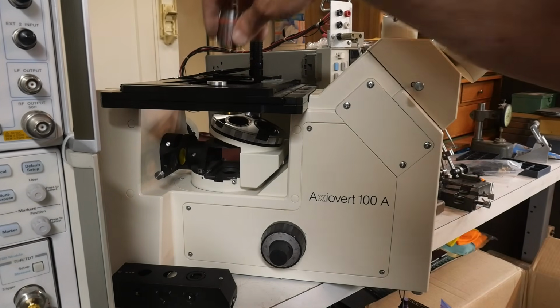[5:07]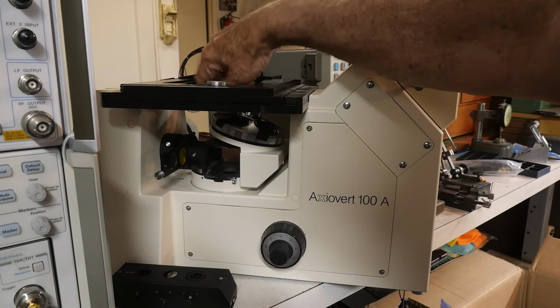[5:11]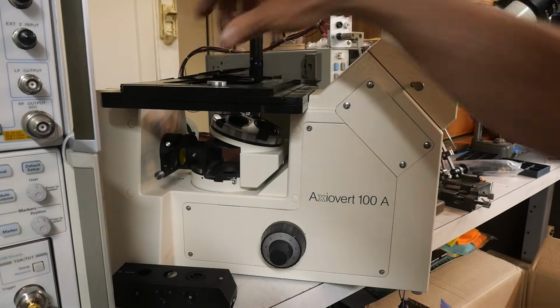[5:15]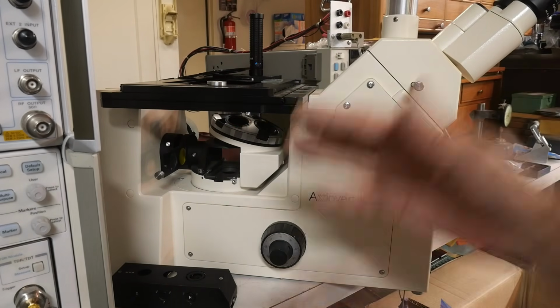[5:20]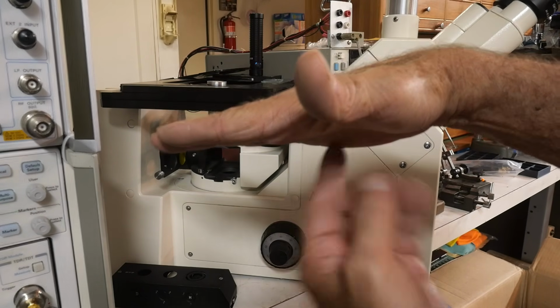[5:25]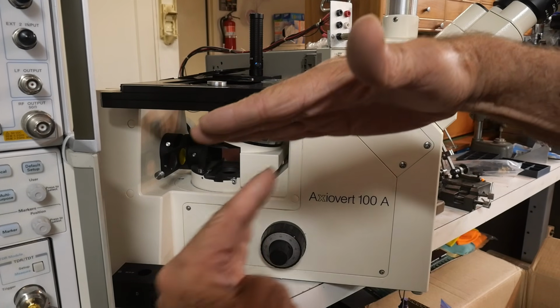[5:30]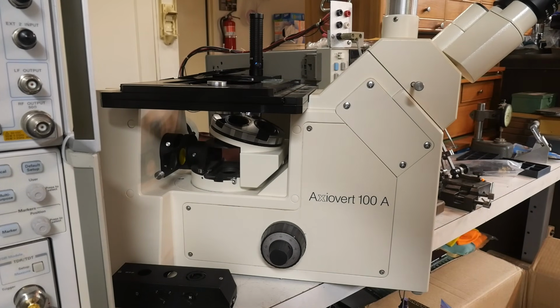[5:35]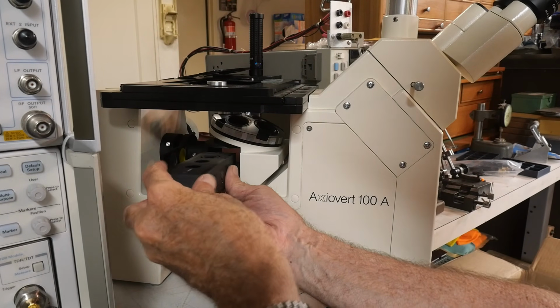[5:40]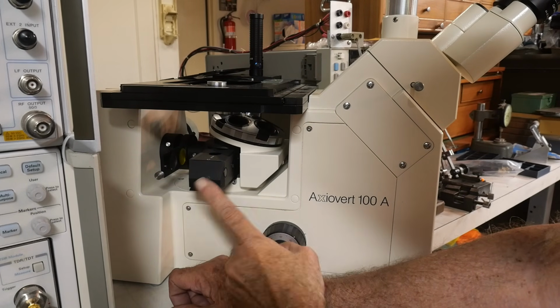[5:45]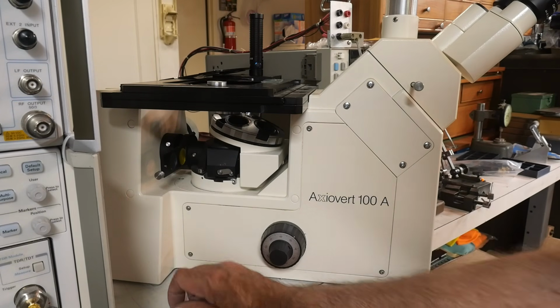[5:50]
Let me put this back in. So if this is the object, and you're trying to look at it, well, actually it's like this, right? If you illuminate it straight on, you'll kind of blind yourself. So by coming in with this cone and then angling it in, the light is coming in at an angle, so you don't get any specular reflections. So that's what that thing does. That's pretty fancy. So dark field illumination, straight through, and neutral density.
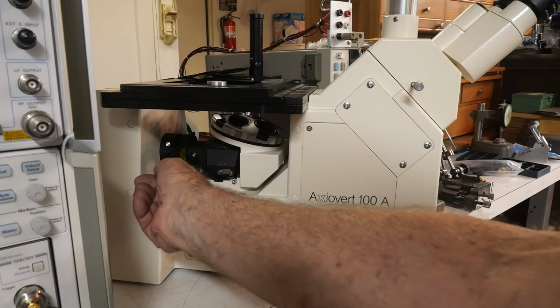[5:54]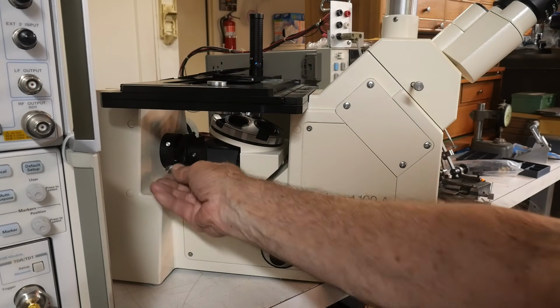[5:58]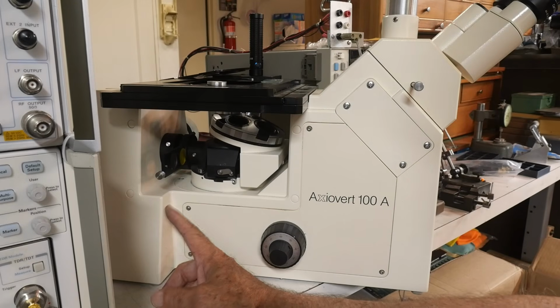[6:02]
There's also a filter pack here that slides in and out. Seems to be a yellow one in the middle right now. I don't know what that's for, but you can put in different filters here to do different things. You can put in polarizers and things like that. Yeah, pretty nice.
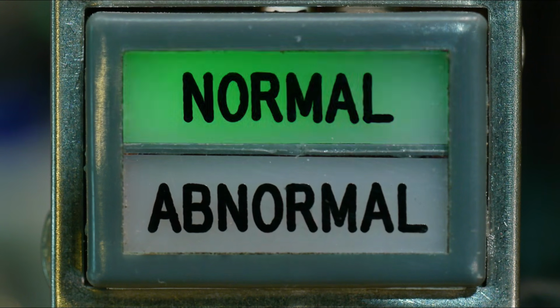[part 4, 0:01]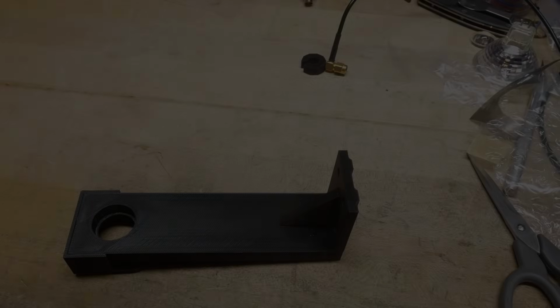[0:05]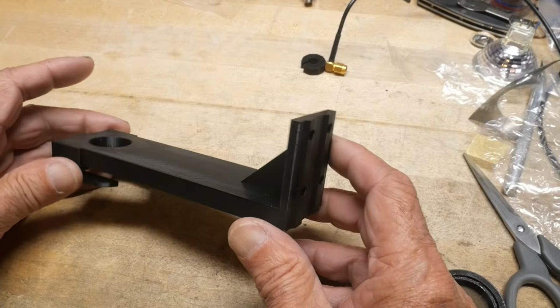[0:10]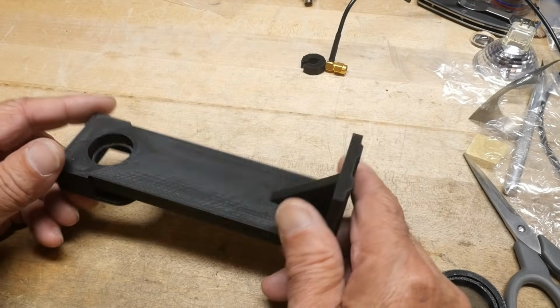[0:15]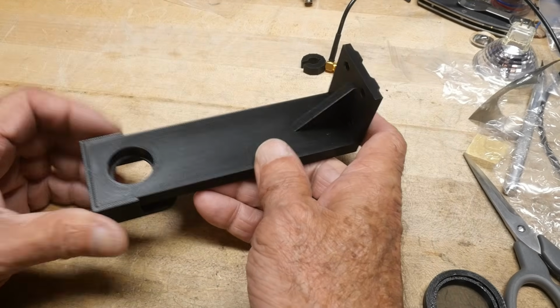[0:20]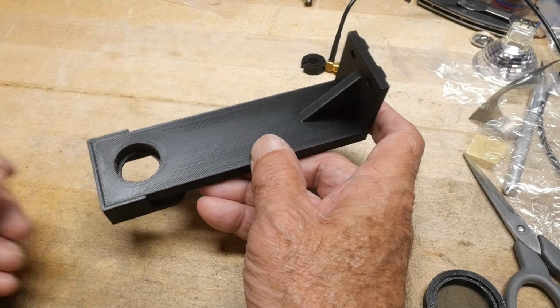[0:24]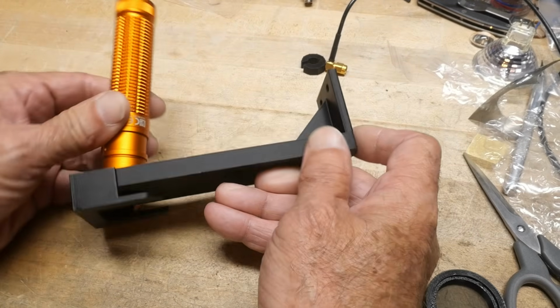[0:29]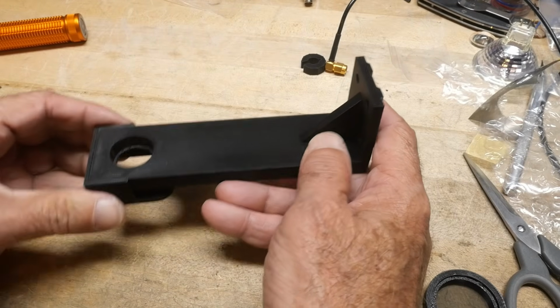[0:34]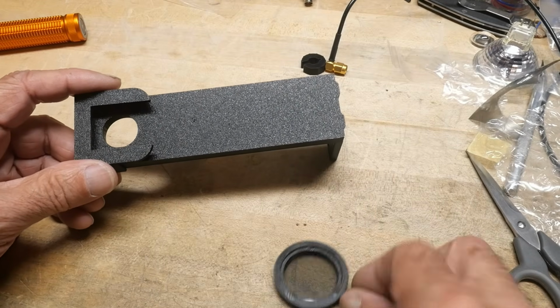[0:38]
All right, I've been playing with my new microscope and I've designed some things for it. This is a filter holder and illumination holder actually. It's going to mount as a bright field transmission type of illumination. It'll hold a flashlight, and that will be the illuminator, and it will come down on the slide. And then on the bottom here is a filter holder, so I can take a filter.
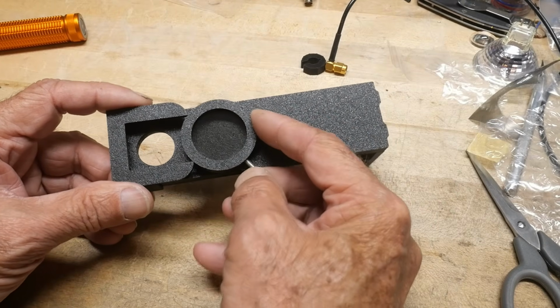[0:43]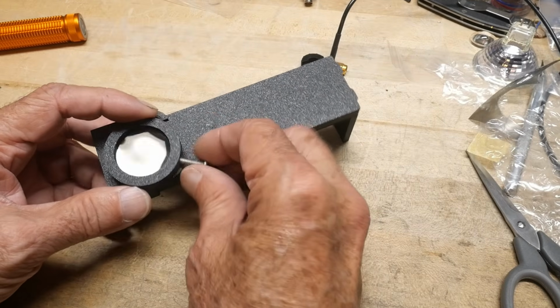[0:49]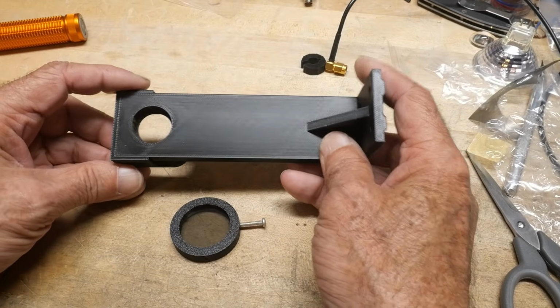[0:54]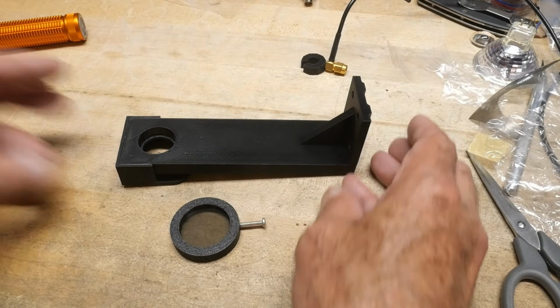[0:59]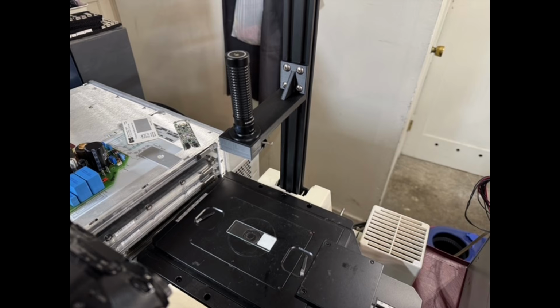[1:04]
This is a polarizing filter, and I can slide it under here, and then rotate it. Right, there'll be a little lever out here, and I can rotate it. So that allows me to inject polarized light from the top. I'll show you a picture here. So you can see there's a flashlight on top, and I've put a rail elevating above the microscope. There's actually an official Zeiss attachment to do this job, but I just don't want to pay the money for it. So this will work just fine.
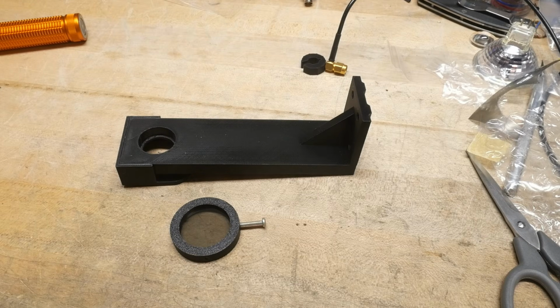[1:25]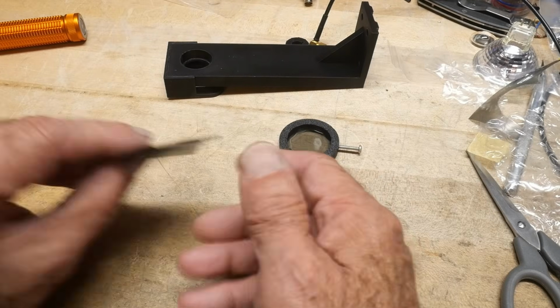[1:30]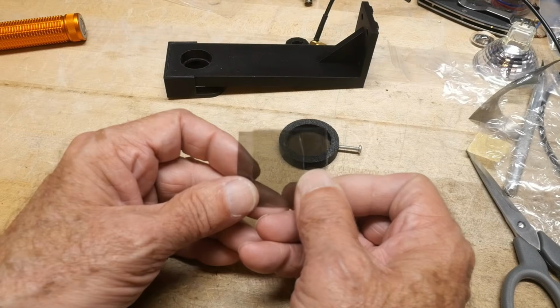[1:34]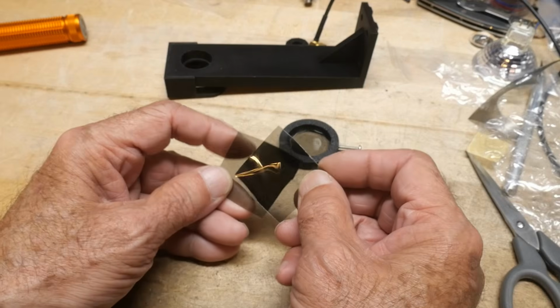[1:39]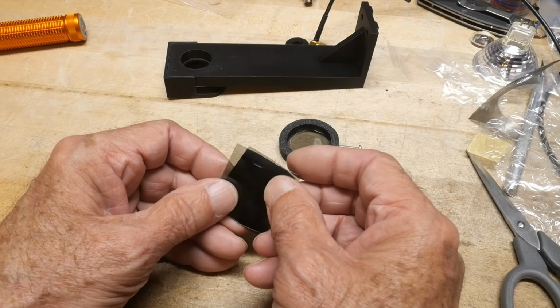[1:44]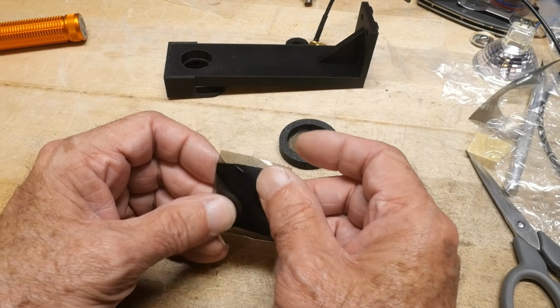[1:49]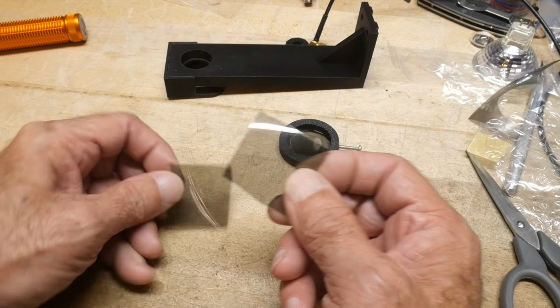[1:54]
So why do you want to add a filter? Why do you want to add a polarizer? Well, let me show you maybe a demo here. Here's two pieces of linear polarizers, and if I put them together, nothing happens. But if I rotate them, they go dark, right? Where they overlap here, they're going dark. So this is what's called cross polarizing, right? Cross polarizing. So you can imagine that you have your microscope, and the illuminator has a filter in it, right?
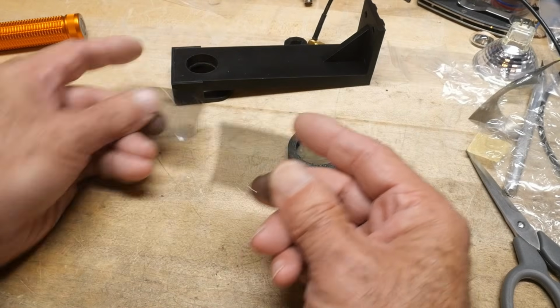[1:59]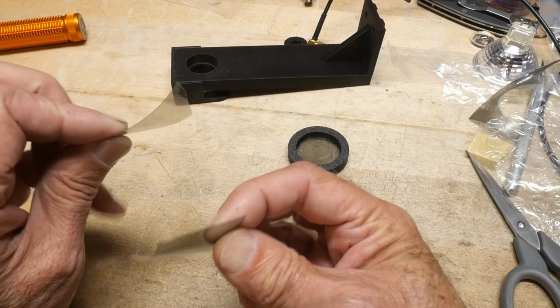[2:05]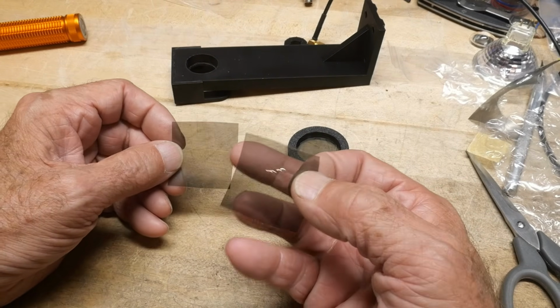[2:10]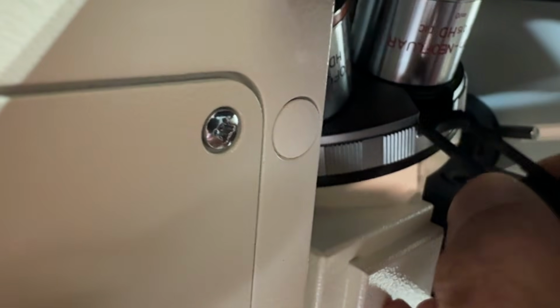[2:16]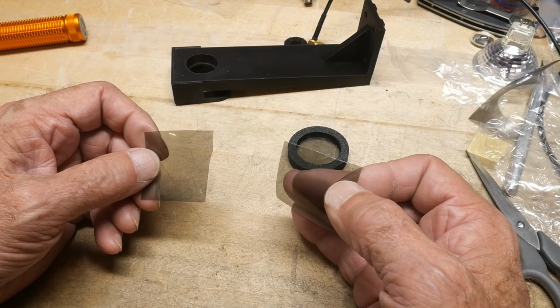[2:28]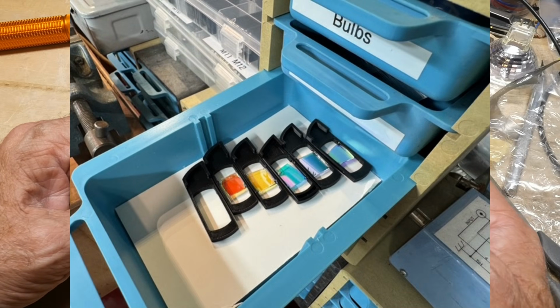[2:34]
So that'll be this one. So the illuminator has that, and then you'll look through the thing you're going to do. It's going to be between these two, and then this filter here will be underneath the objective. Now in the microscope, there's a little drawer, this tiny little drawer that slides out that allows you to place filters underneath the microscope objective. And so I have some different filters. I have a linear polarizing filter. I also have some colored filters just because I had them. I went ahead and reverse engineered their little drawer and 3D printed a whole bunch of them so I can have a whole bunch of different filters.
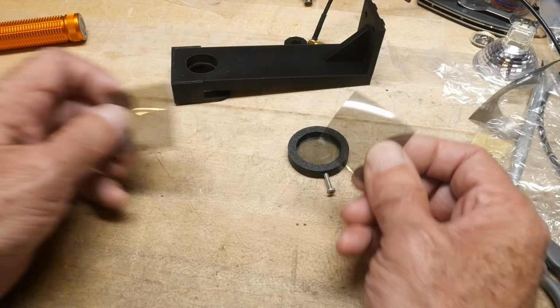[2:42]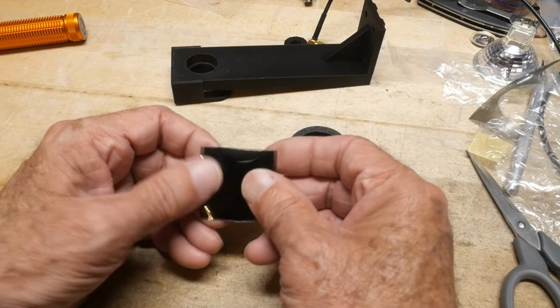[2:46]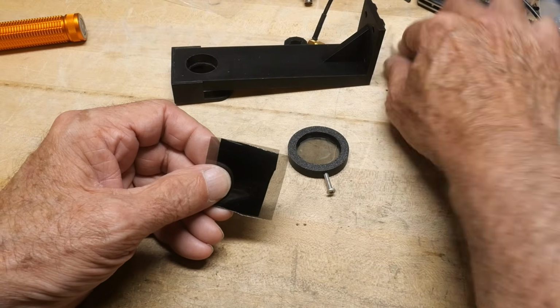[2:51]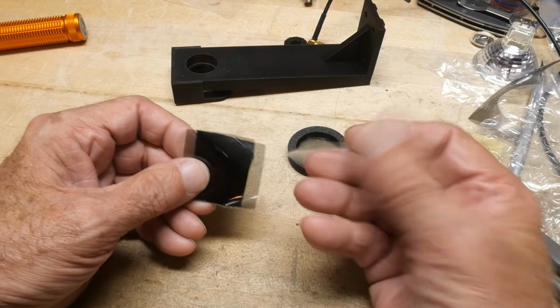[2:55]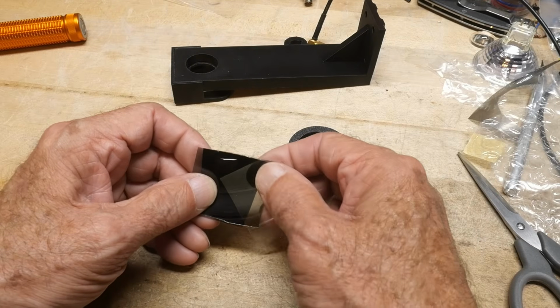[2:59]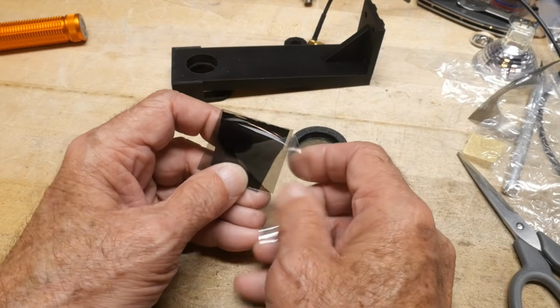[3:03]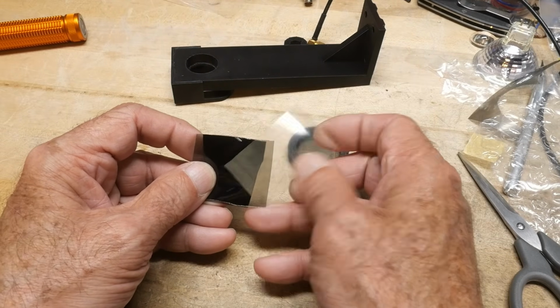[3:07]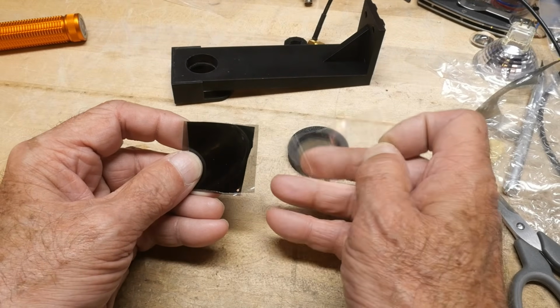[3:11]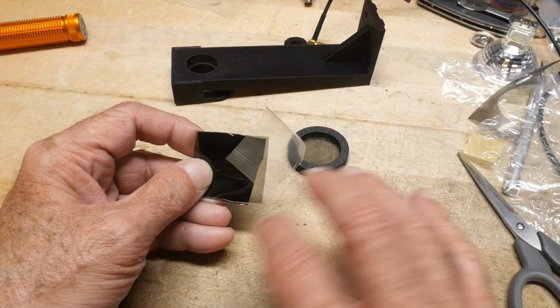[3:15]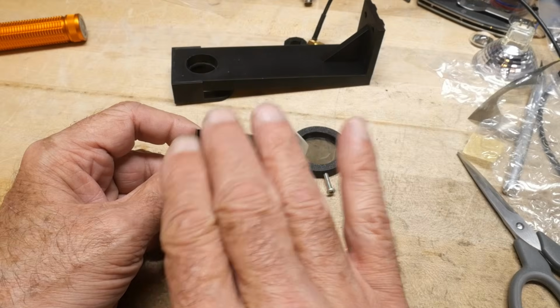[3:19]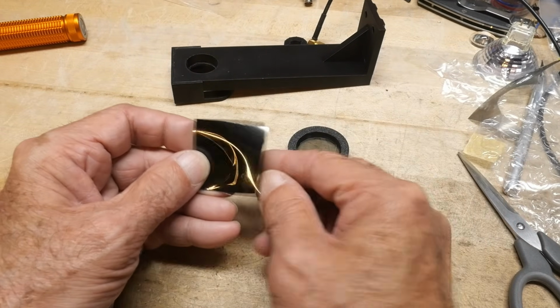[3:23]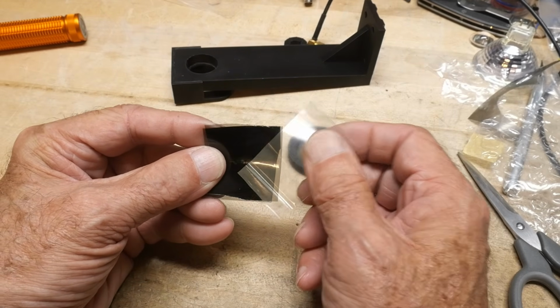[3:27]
Okay, so let me tell you why you want to do this. Okay, so let's go ahead again with our crossed polarizers here. Okay, if I put something in between, here's a piece of plastic. Okay, this is just some packing material. And if I put that between the filters, it can uncross the polarization. If you add anything birefringent, it will rotate the polarization, and instead of it being crossed, it'll be at some angle. Okay, so that's what I'm doing here. You can see this is typically completely blocked off, and I'm going to slide this piece of plastic between the two of them, and now we can see it.
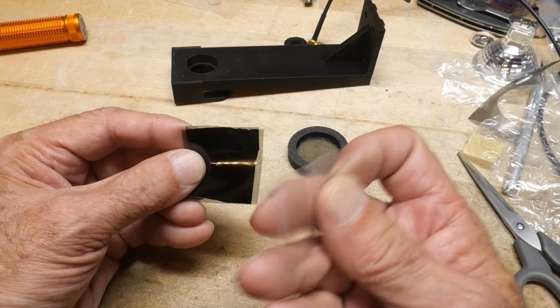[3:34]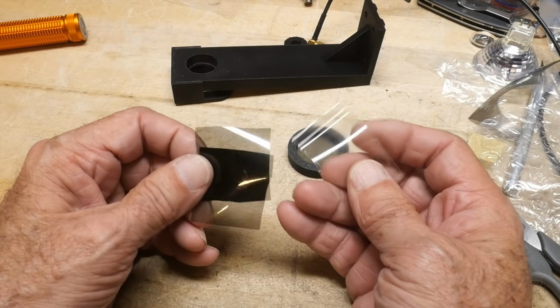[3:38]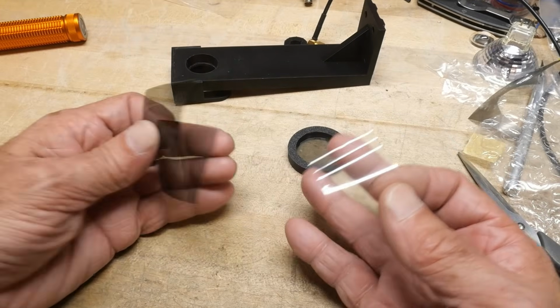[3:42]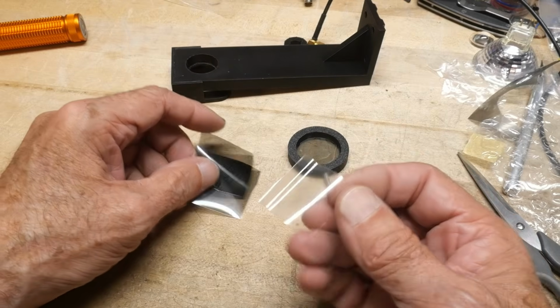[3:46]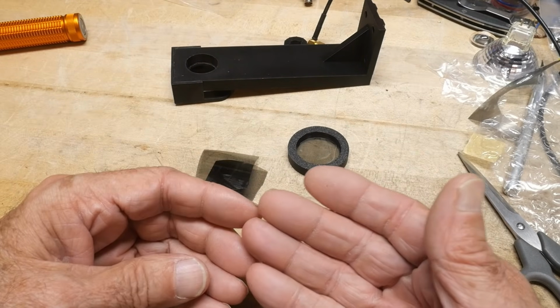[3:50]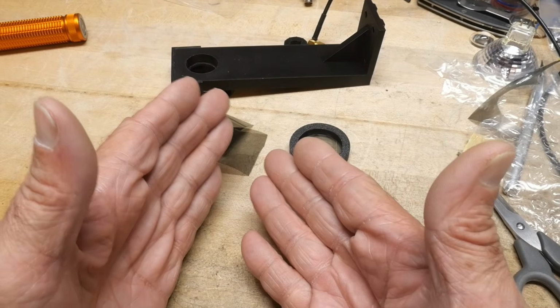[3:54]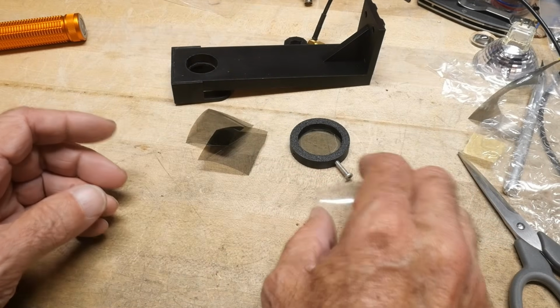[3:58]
So imagine that this is our microscope slide, our thing of interest, and we're going to put it in the microscope and see what it looks like under polarized light. Now, not everything is going to do anything under polarized light. Some things don't do anything at all under polarized light, but some things do, things that are birefringent. Birefringent means that the light is separated into two different refractive indexes depending on the polarization states, and it will rotate the light for you.
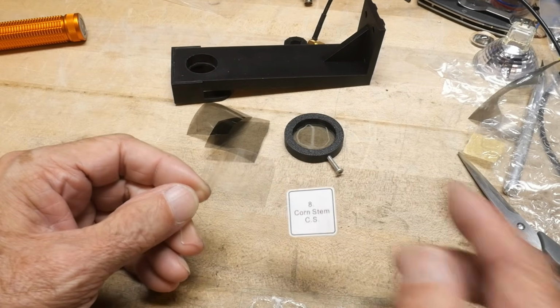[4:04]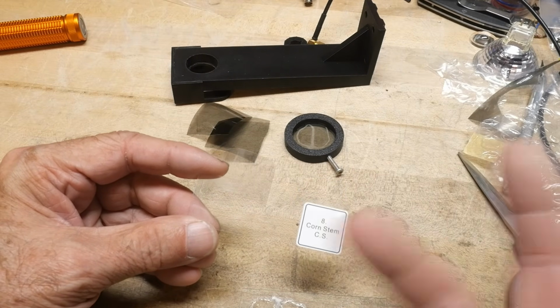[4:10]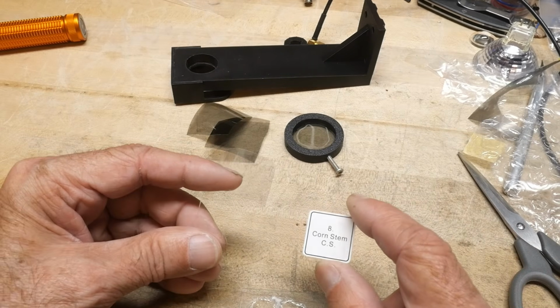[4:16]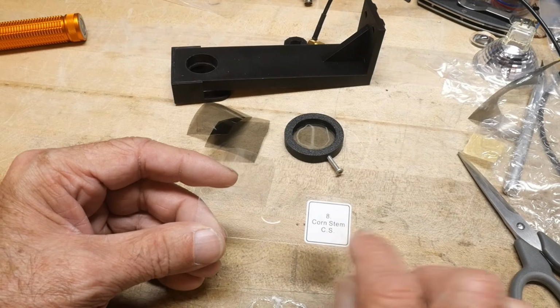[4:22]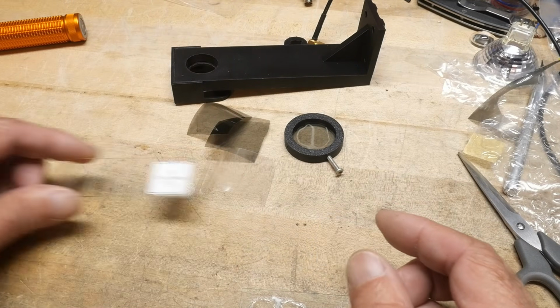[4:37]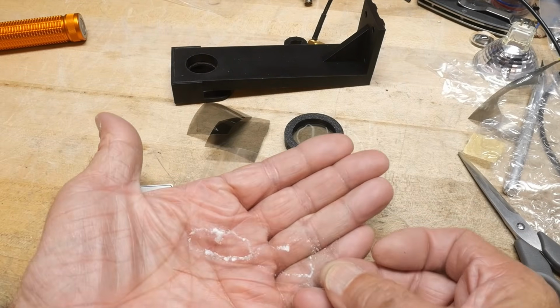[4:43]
All right, I have a couple of microscope slides that I'm going to show you pictures of. I know this is hard to see, but this is a prepared slide. You can buy sets of slides that have all kinds of things in them, and they come in a little box, and I have a set that's real nice. And this is a piece of corn stalk, a corn stem, and it is sliced really thin and prepared. So we can see the individual cells that are the plant. We can see that in this microscope slide. Okay, and then this microscope slide I prepared myself. Okay, this is a really ugly one.
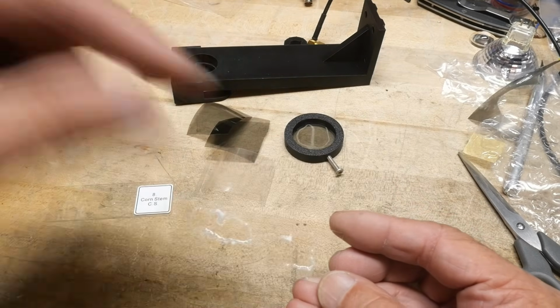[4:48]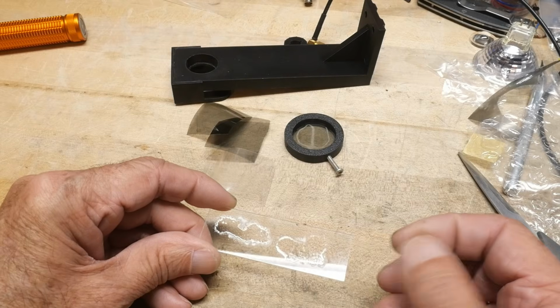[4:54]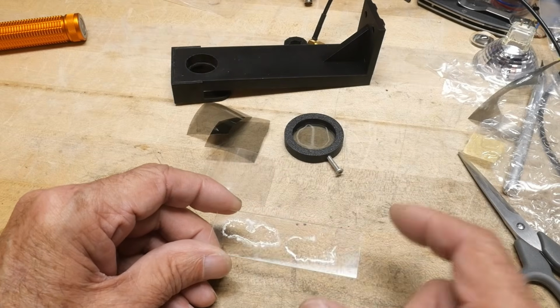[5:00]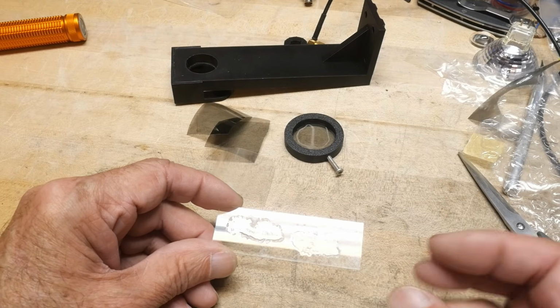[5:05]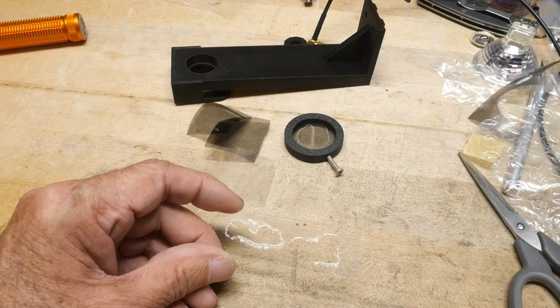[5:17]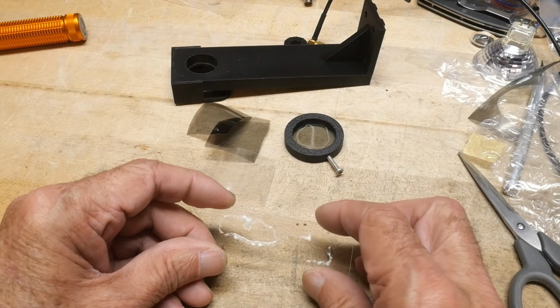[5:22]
What it is, a normal slide where I've sprinkled on stevia. Stevia is an artificial sweetener, okay? And I've put stevia powder on the microscope slide, and then I wetted it with water. And then I let the water evaporate and dry. And in the act of it getting dissolved in solution and then evaporating and going out of solution, it grows crystals. And those crystals are birefringent, and they look really pretty under the microscope. So yeah, let's go take a look.
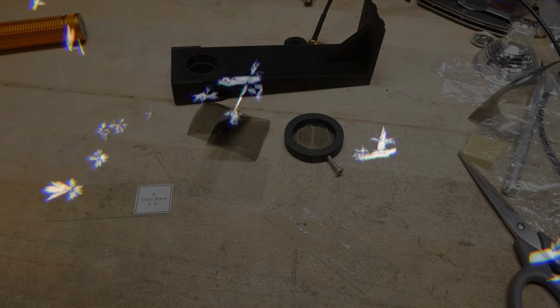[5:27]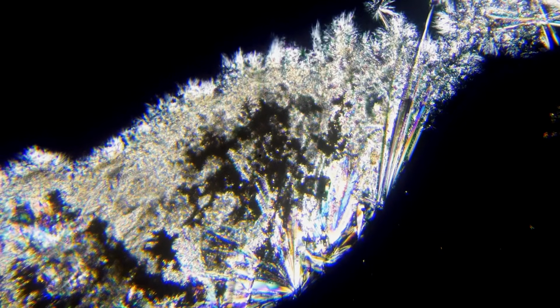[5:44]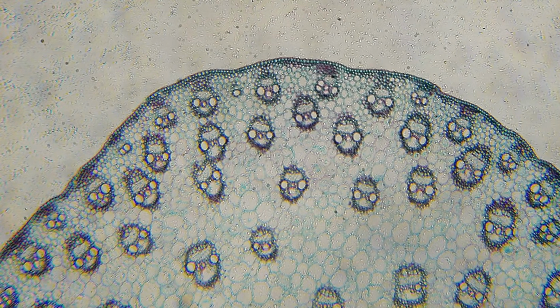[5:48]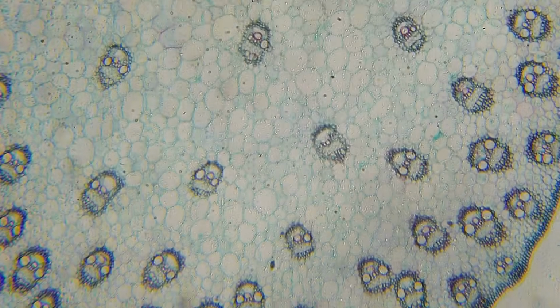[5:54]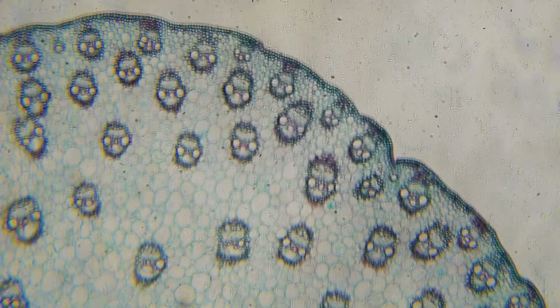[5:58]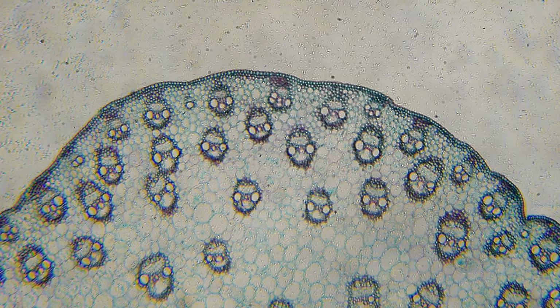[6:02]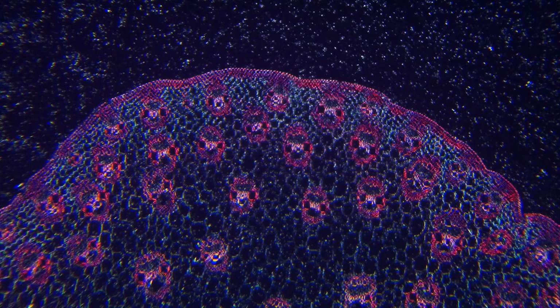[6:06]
So this is the stevia. You can see that having cross polarizers, the background is black until the object uncrosses the polarization. You can see the pretty crystals here that the stevia has. All right, and here is the corn cells, the corn plant, and this is unpolarized light. And then if you put them between cross polarizers, wow, look at the difference. You see really big differences between different types of cells, and they turn into different colors and things depending on the birefringence and the thickness and things like that.
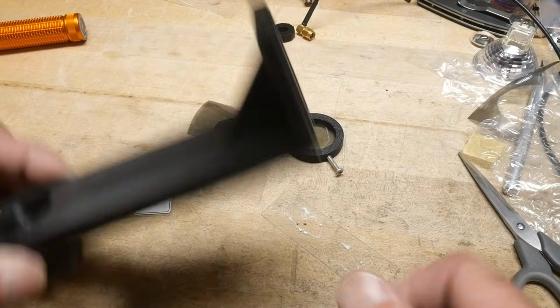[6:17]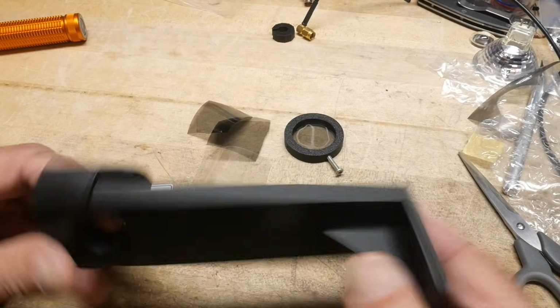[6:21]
All right, so yeah, having fun with my microscope. It's great to have a 3D printer where you can just build stuff for it and not have to pay any money.